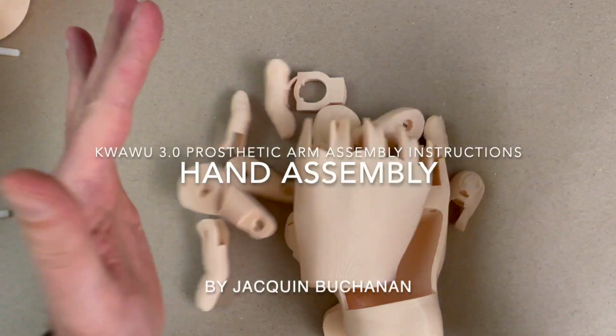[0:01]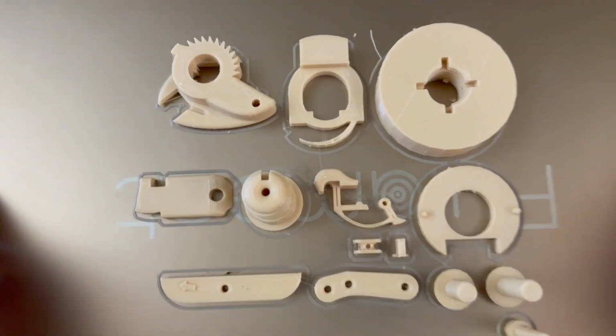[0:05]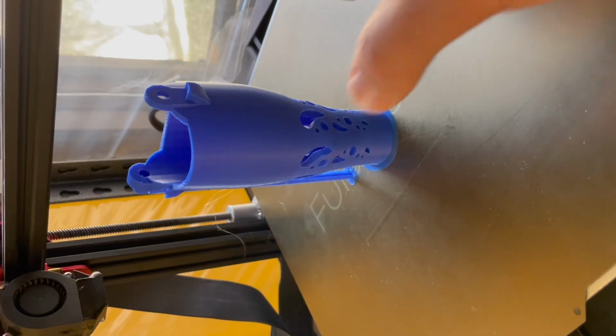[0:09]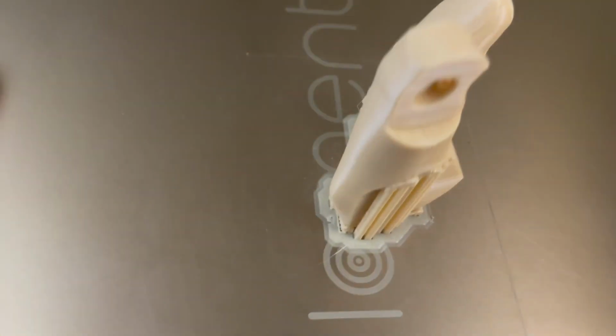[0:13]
Welcome to the Kwawu 3 hand assembly video. You've probably spent days and hours printing each of these parts, and you're excited to get ready to assemble the hand together. But first, we're going to have to clean all these parts. And so I'm going to go through the various tools that I tend to use to do the cleaning.
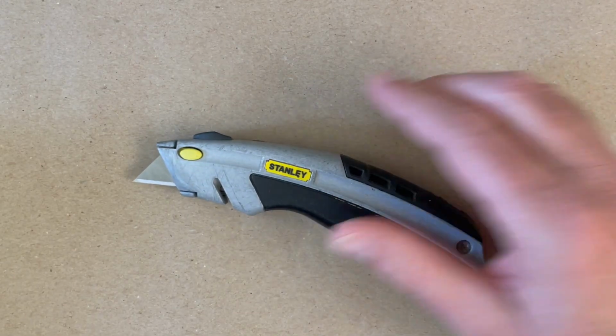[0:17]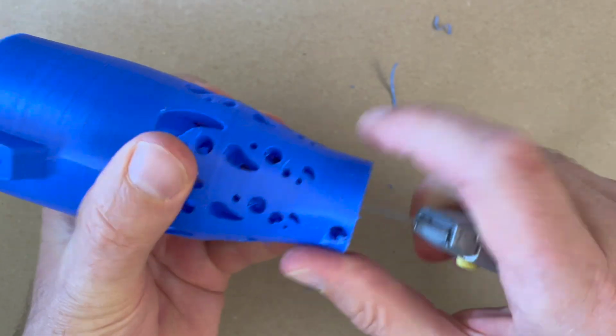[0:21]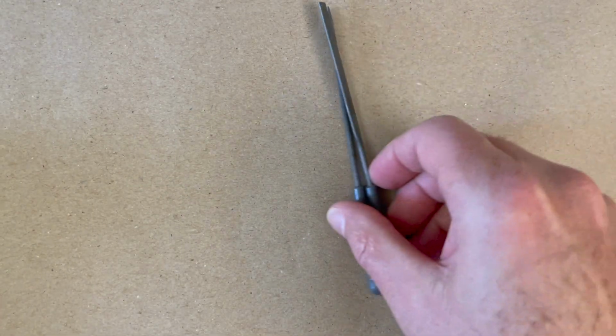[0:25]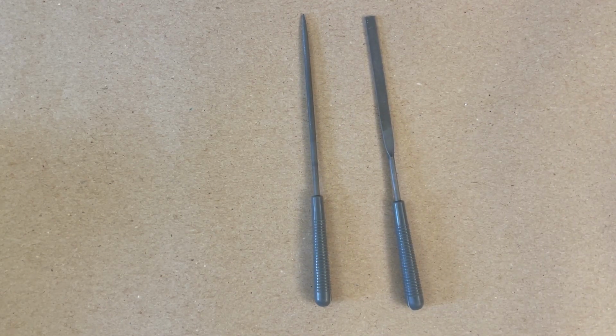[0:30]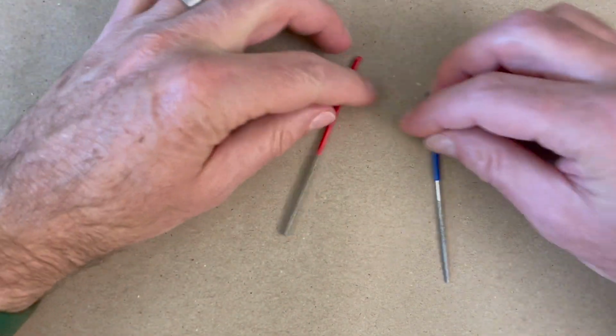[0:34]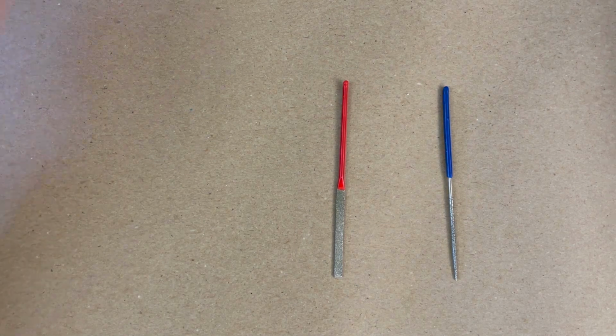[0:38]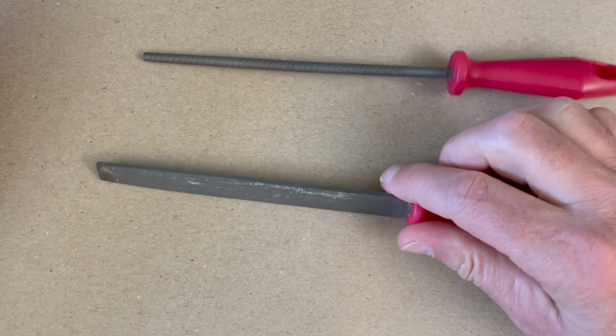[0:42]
My favorite tool is the utility knife. This thing is really useful to scrape parts, clean parts, cut parts. It's my primary tool. My second tool are these small files. I tend to use these small files to clean out the area where the hinges go, but these are kind of the files I use most of the time. I have another set of files that I use for the child size, a little bit smaller. They tend to be sold as jeweler files. I also use these larger files when I really need to smooth something.
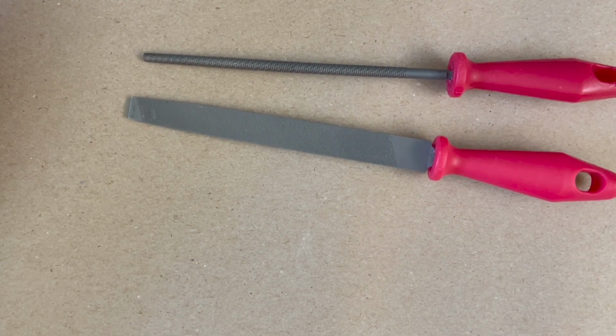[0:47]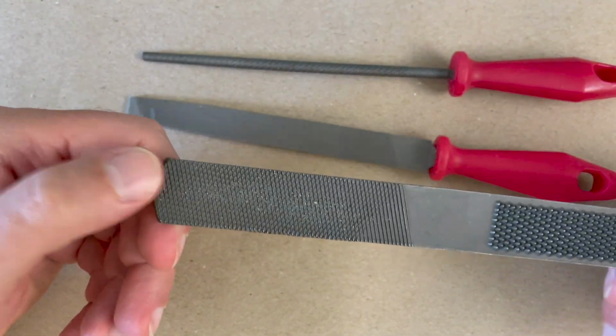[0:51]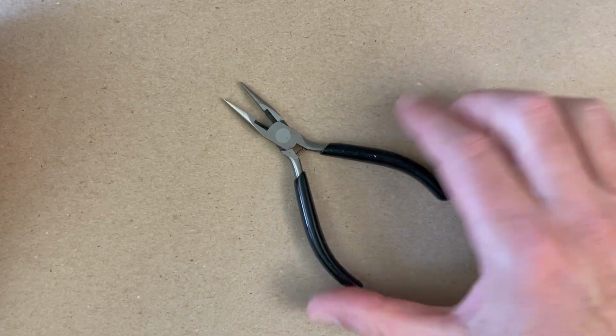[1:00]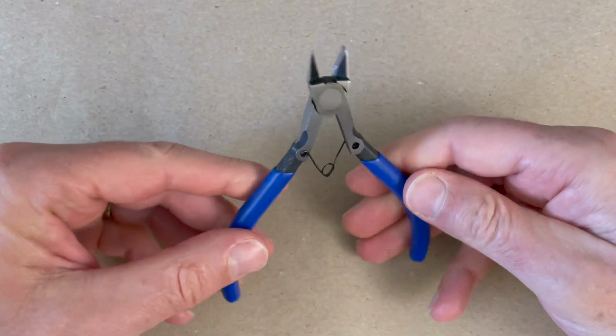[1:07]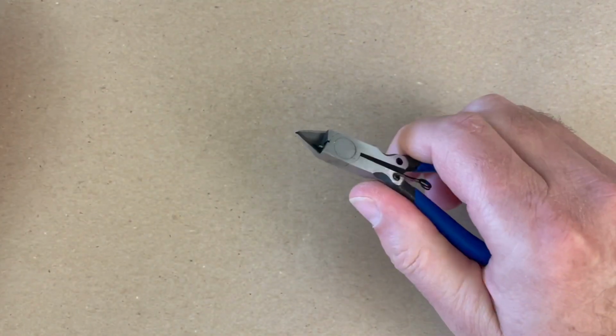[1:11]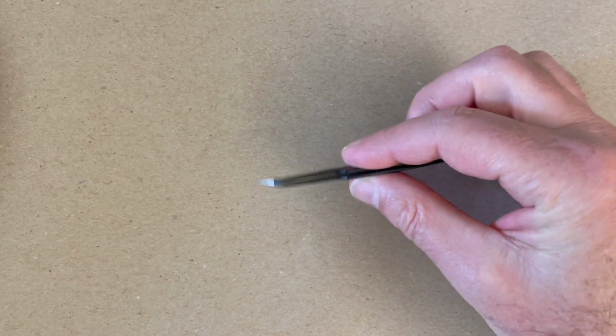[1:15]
Printed parts that are maybe touching the print plate and various things like that tend to need a little more plastic taken off. And I use these larger files just to really clean out some plastic. Needle nose are great, pulling off, tying knots. They're great for pulling off supports, all sorts of things like that. These flat end clips are great. I use these all the time too for cleaning parts. Tweezers are great for tying knots primarily, pulling string through, stuff like that.
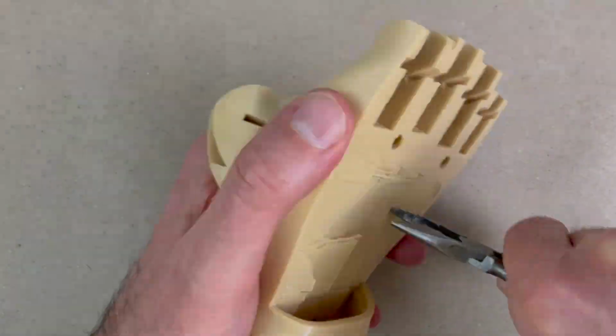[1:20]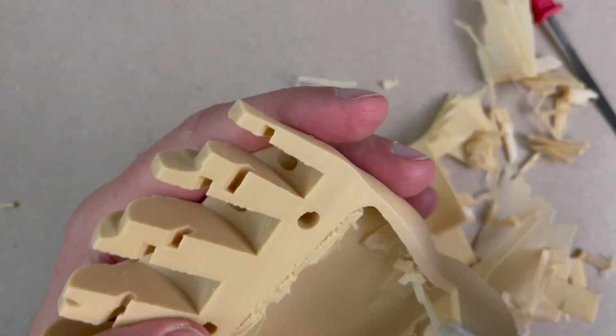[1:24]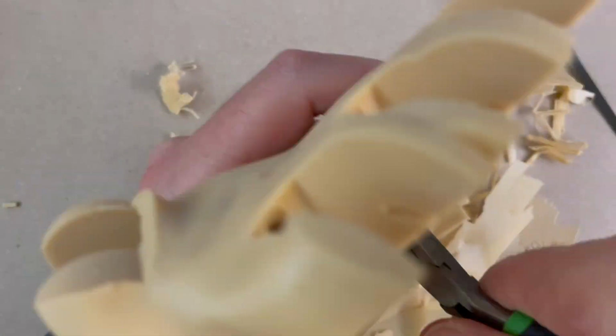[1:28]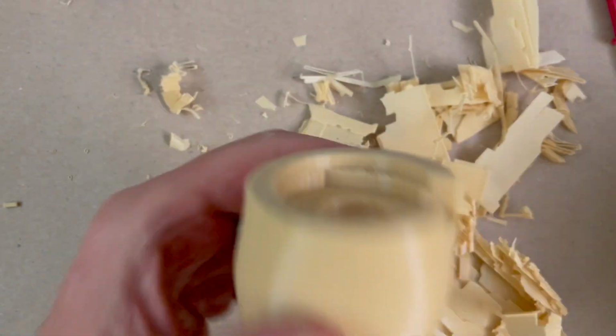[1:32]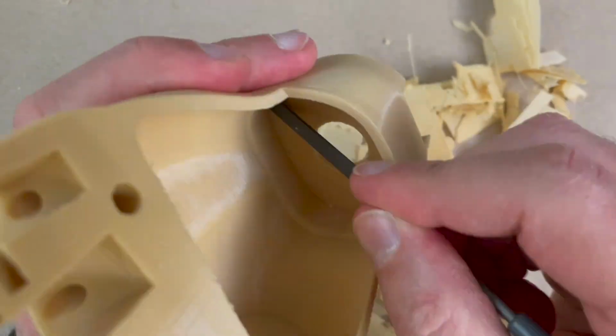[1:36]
All right, let's start cleaning these parts. I hate to break it to you, but that's gonna be most of this video, is cleaning the various parts. I spend roughly an hour, maybe more, on each hand. I'm going to go ahead and clean all the parts here for the entire arm while I've got all this equipment out for cleaning, but it really is the major part.
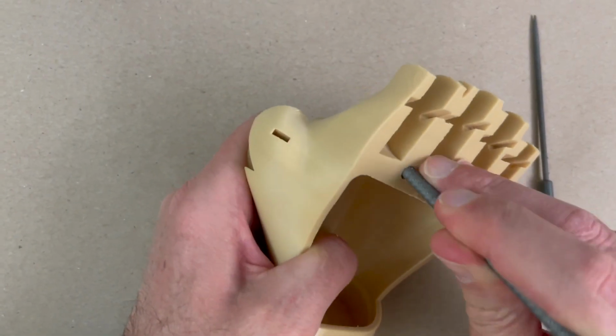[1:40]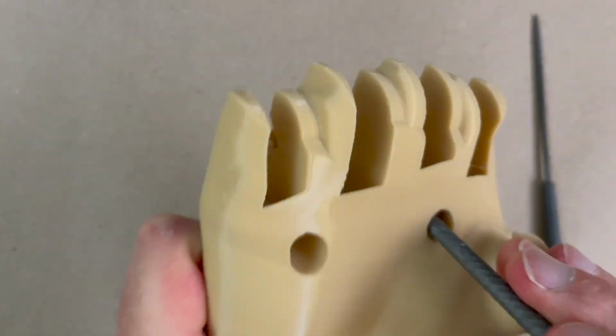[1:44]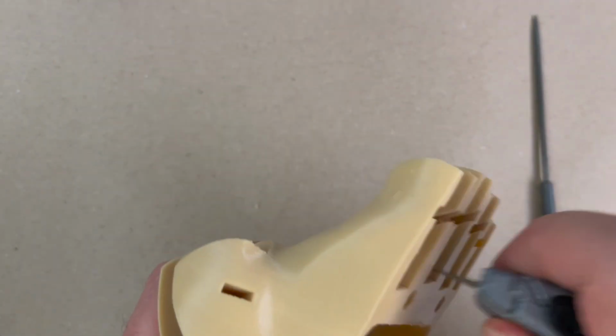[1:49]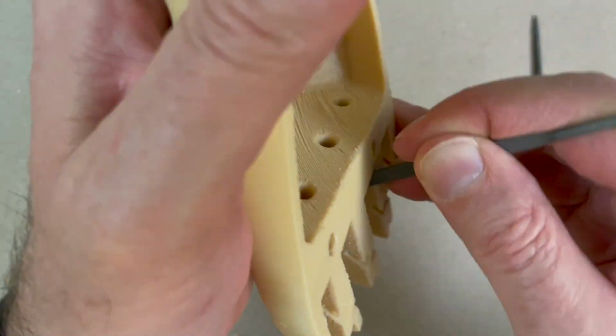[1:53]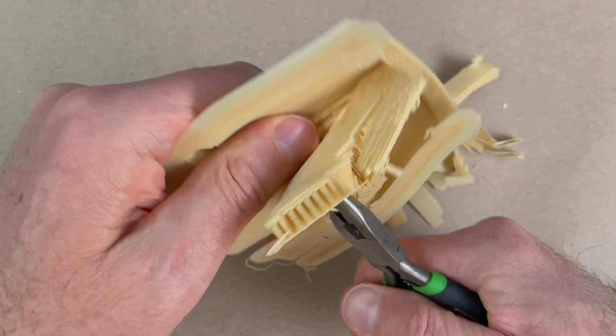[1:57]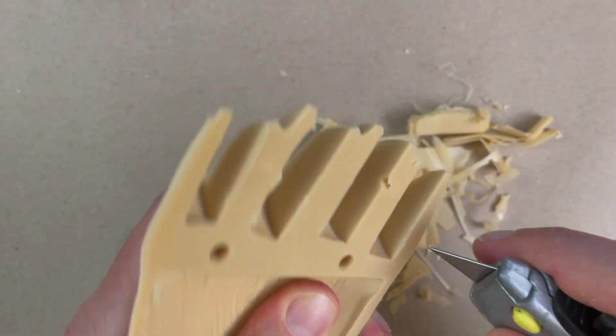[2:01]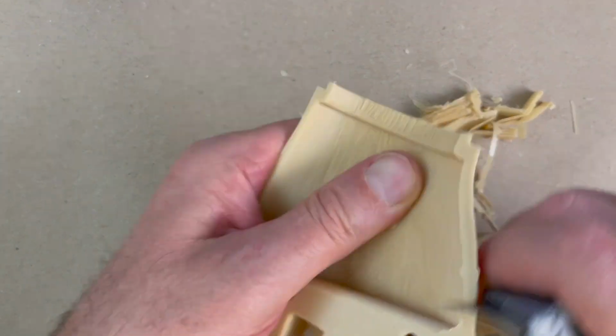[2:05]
So I pull the supports out, clean out all the various holes, particularly if there's drooping in the bridging over these holes. I like to get them all clean, clean all the edges so all my parts slide next to each other really well. I'm going to file the parts and then try them next to each other, make sure everything moves really clean. Again, the utility knife is my favorite tool. I use it to clean the edges and clean out parts most of the time.
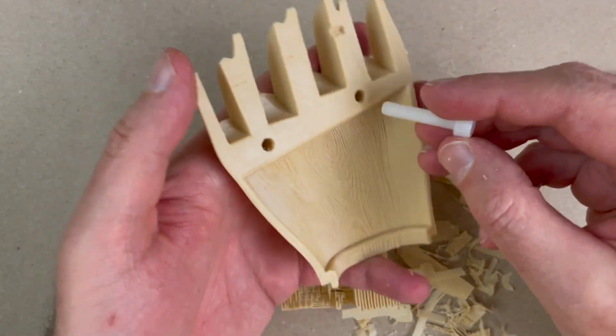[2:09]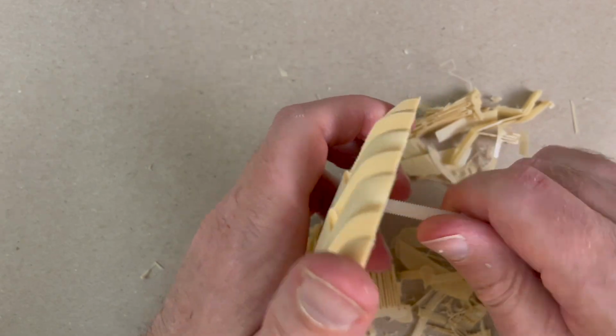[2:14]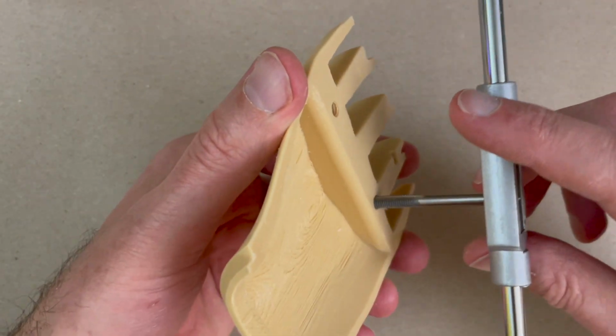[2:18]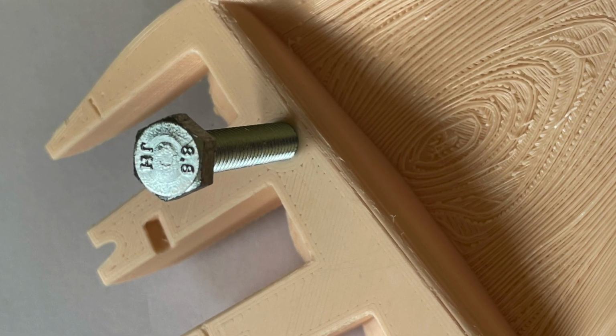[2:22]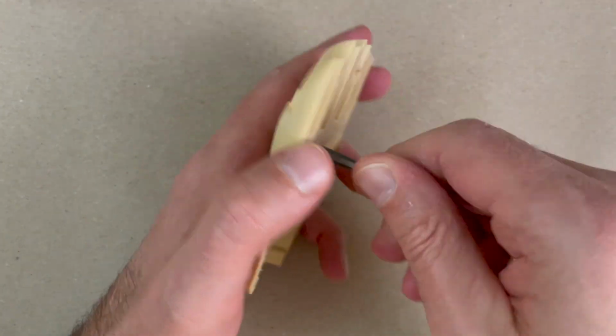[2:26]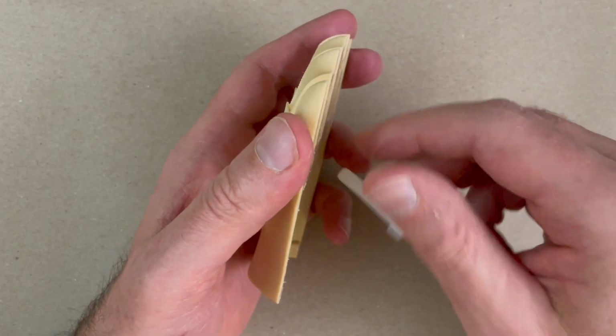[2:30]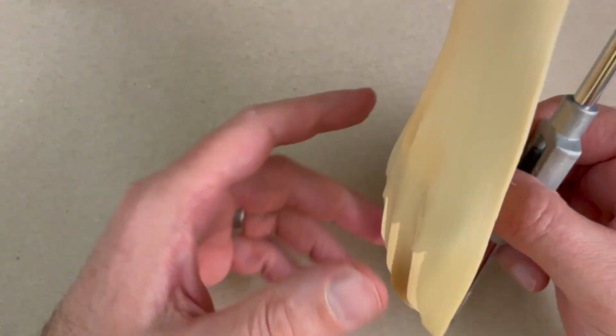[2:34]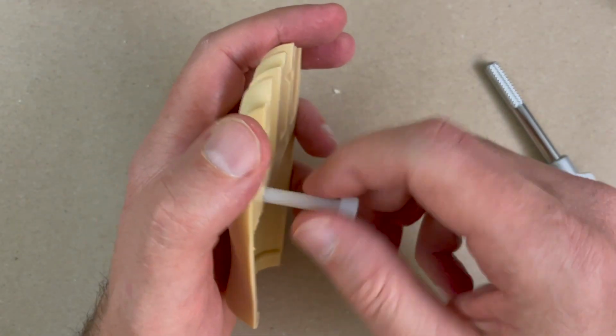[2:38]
Let's try and fit these bolts in the hand, right? I tend to use a tap and die thread to clean out the threads. You can use a regular metal bolt, but I use the tap and die just because I have a set. All the threading on the Kwawu hand is in metric, so if you're gonna buy a few sets, they're all in metric. So sometimes I have to clean it out twice, but I like to clean it out until I can sort of put the bolt in there really easy.
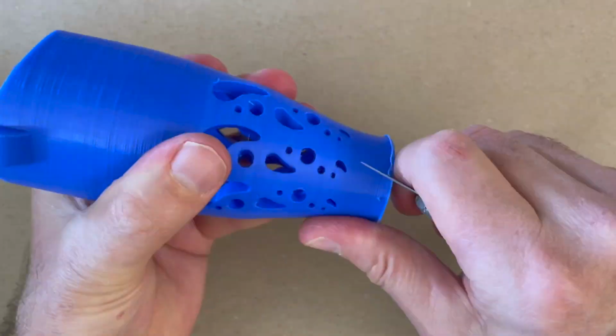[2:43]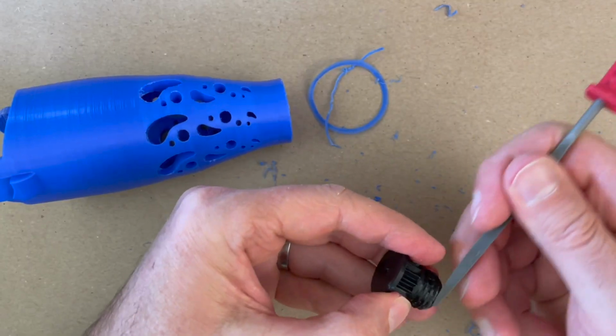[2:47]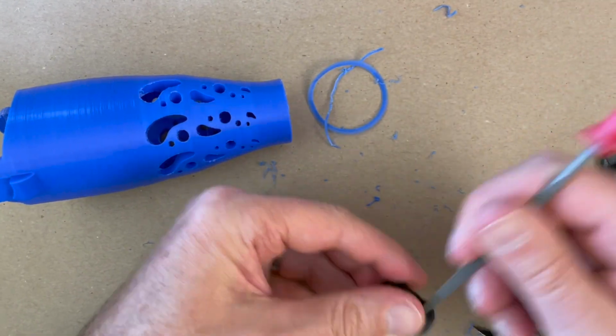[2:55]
Now let's move on to cleaning the socket itself. I'm gonna clean it mostly with the utility knife. I wanna get this thread from the wrist bolt really nice and clean, so it goes in easily as well. So I'm gonna clean the threads off a little bit, both inside and out. I wanna make sure that this wrist bolt screws in nice and easy.
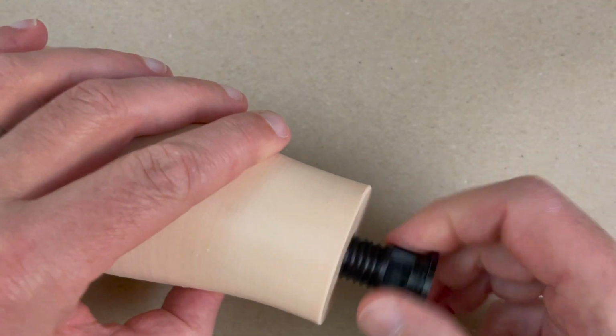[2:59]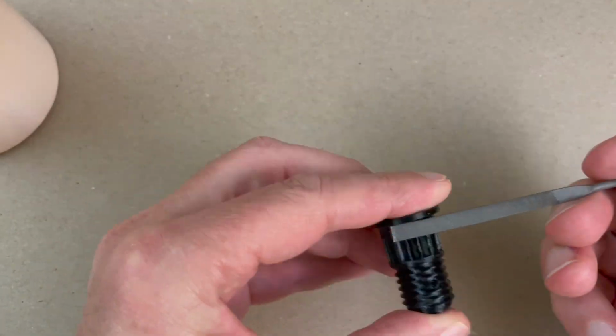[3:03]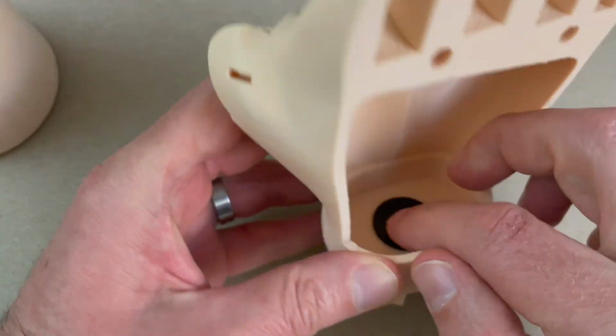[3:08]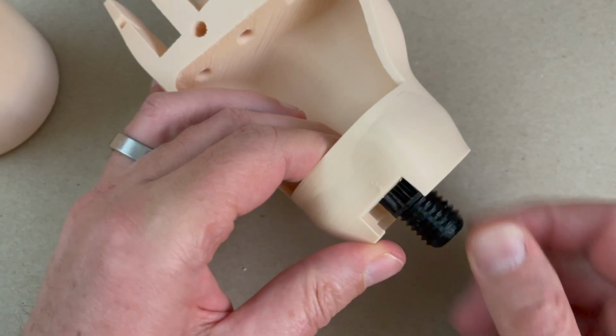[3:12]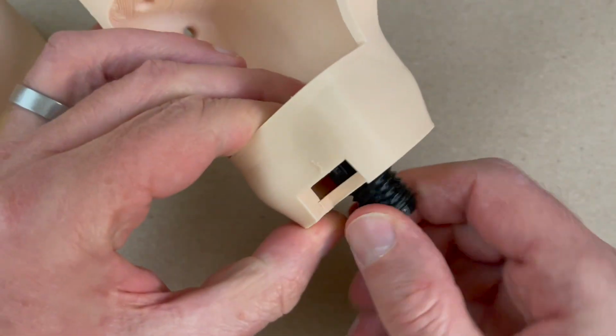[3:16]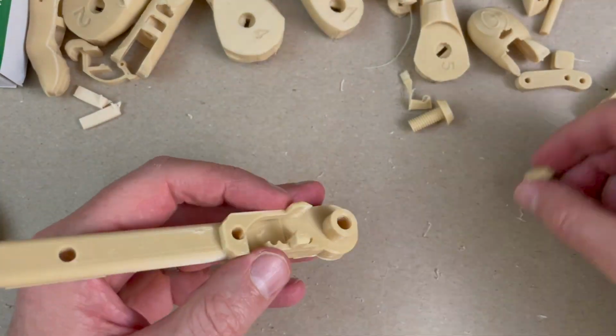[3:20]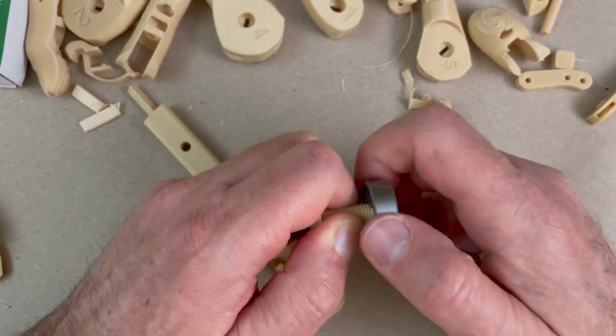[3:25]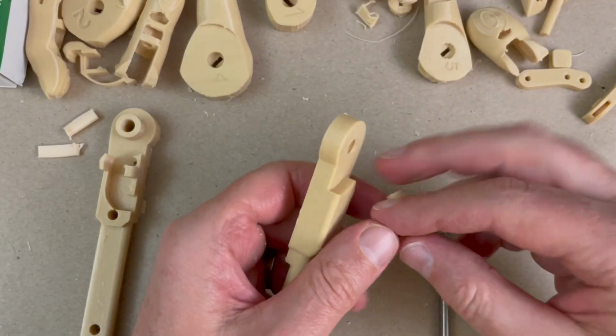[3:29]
Again, I'm going to use a tap and die on the elbow bolts as well. I like to use the 3D printed elbow bolts. I think they work fine, so I'll use the tap and die on those as well.
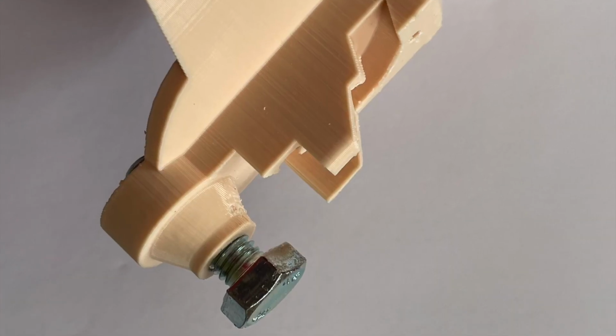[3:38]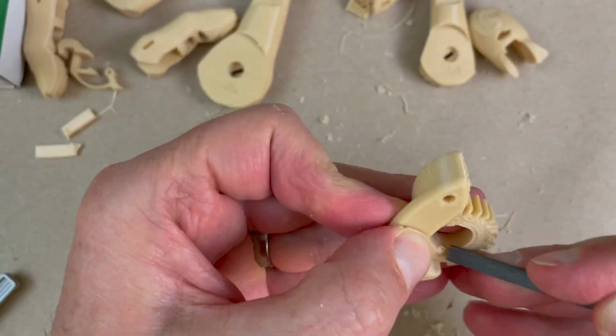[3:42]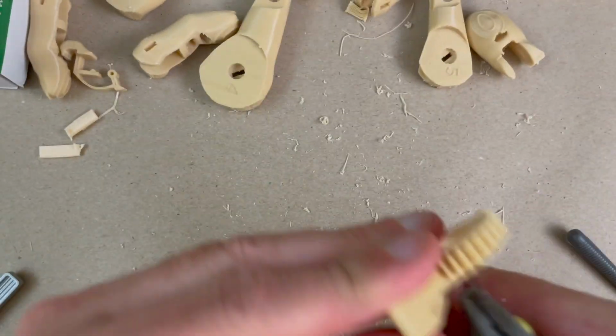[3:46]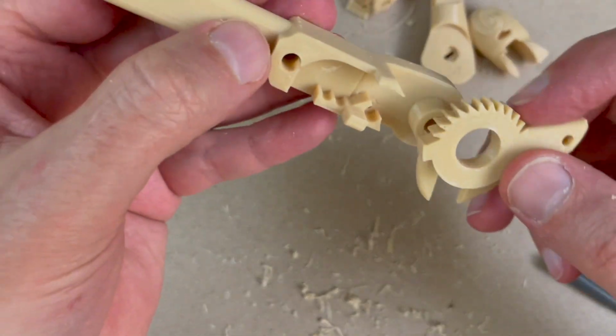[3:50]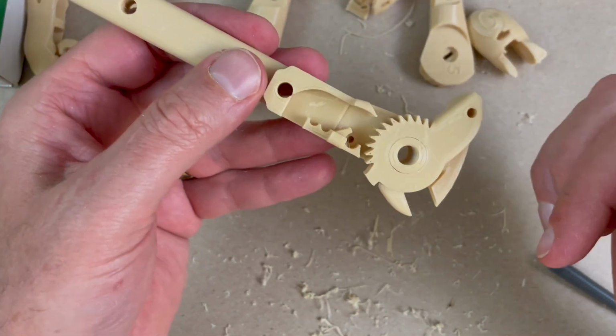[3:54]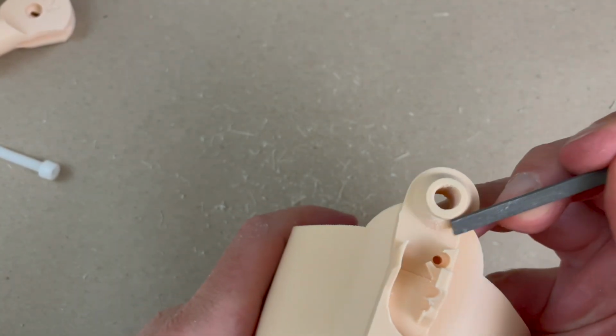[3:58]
You can use a regular bolt if you want to clean the threads. The elbow bolt in this ratchet area, it's a really tight fit. This is a 1 millimeter tolerance area, so expect to have to file this down and clean this a little bit to get these to move nice and smooth. They should move nice and easy and smooth. Not a lot of slop, not a lot of wiggle, but easily move.
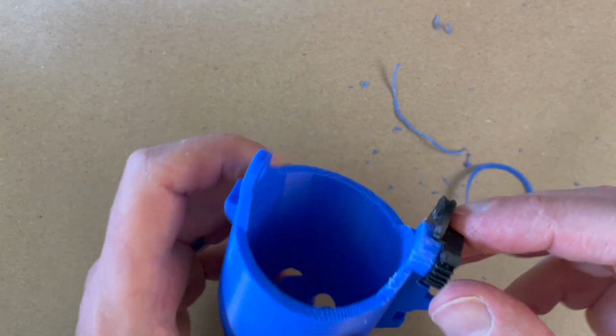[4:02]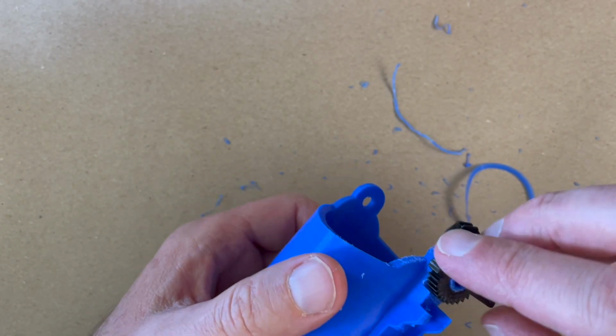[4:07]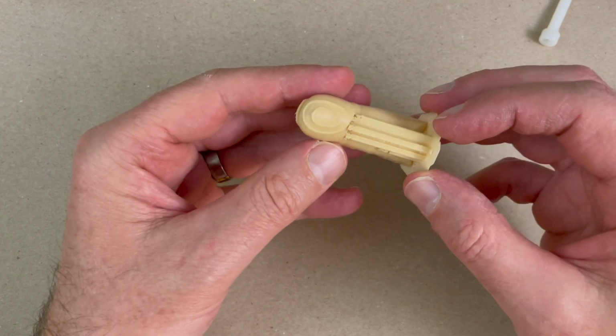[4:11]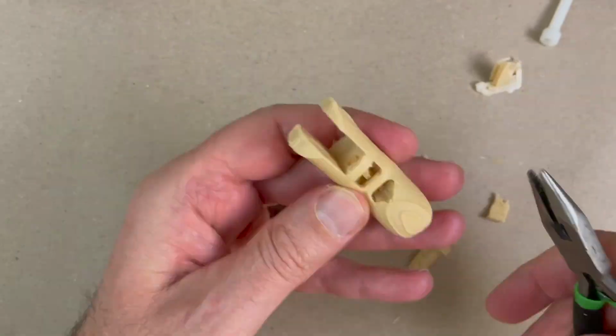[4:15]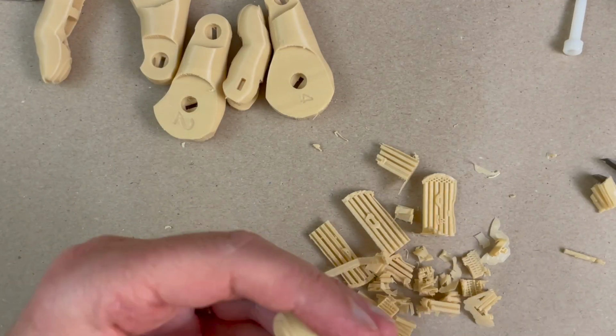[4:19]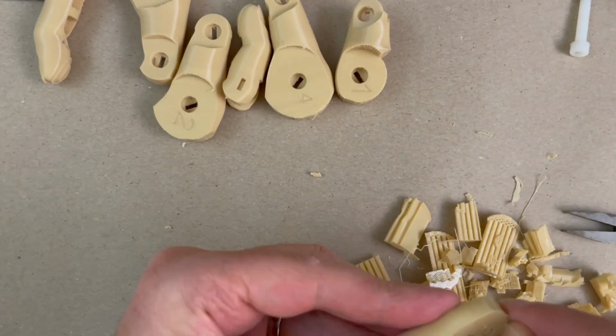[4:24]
Whether you're doing the socket or the wrap design, you're going to need to file this down a little bit. I'm going to go ahead and clean all the fingers. This is how I usually print them, right? I try not to get supports inside any of the holes in the parts when I generate supports, because it's just hard to clean them out and it shouldn't be necessary.
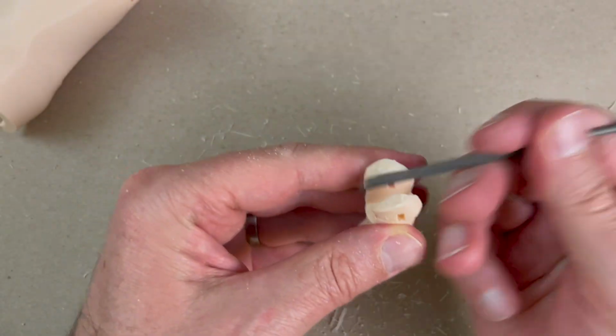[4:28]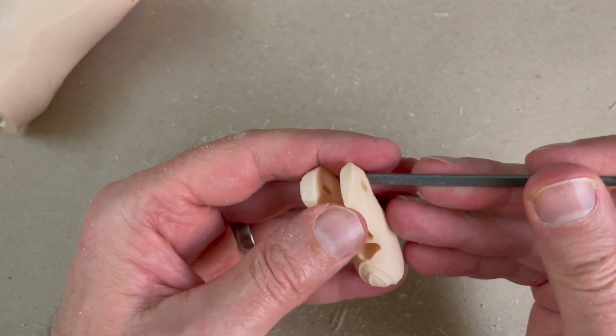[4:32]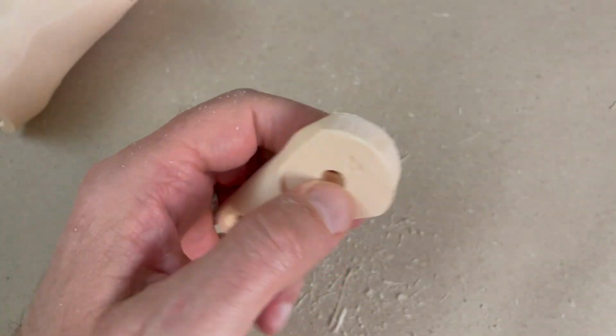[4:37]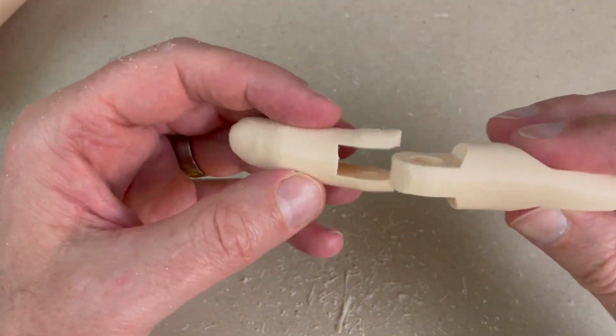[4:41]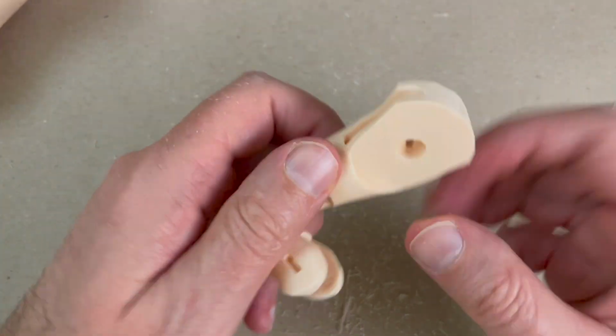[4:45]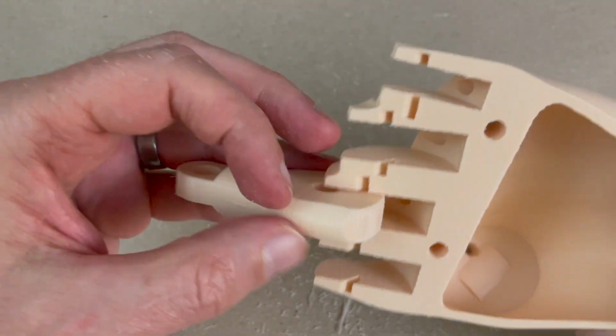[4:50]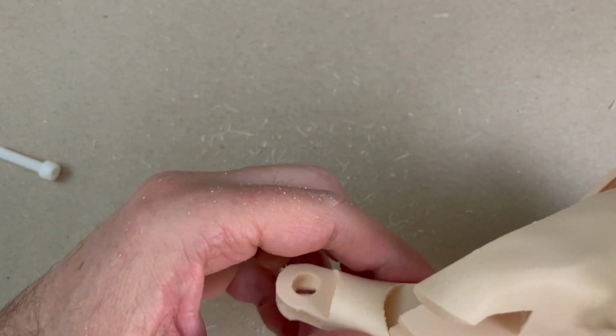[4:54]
So again, I'm gonna file all these down, particularly the areas that touch the printer bed. I want these nice and round and smooth, and the area where the hinge goes in, I want that all nice and smooth. I'm gonna test each of these finger parts to make sure they move. I don't feel any friction. No rubbing, right? Just make sure they go well. All right, I realize I'm putting the number 2 finger in the number 3 slot. Sorry about that, I didn't get to re-record.
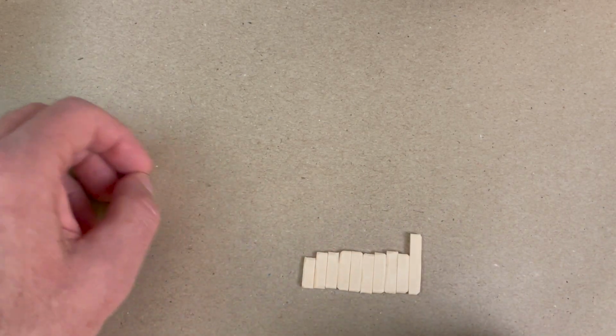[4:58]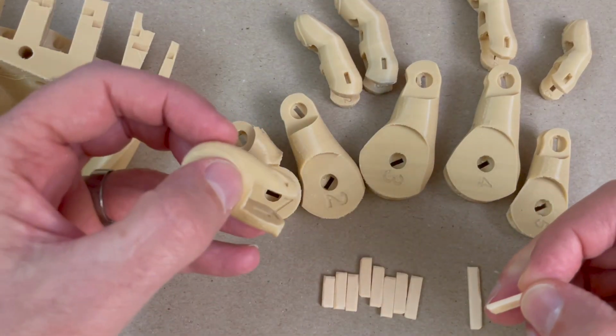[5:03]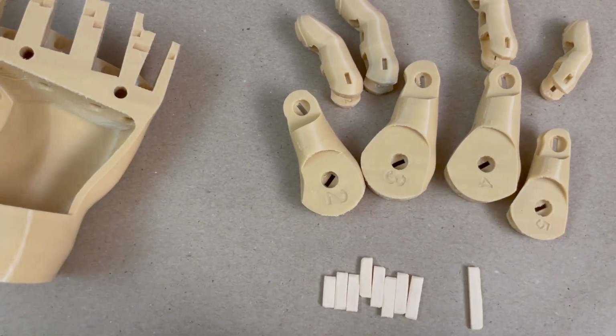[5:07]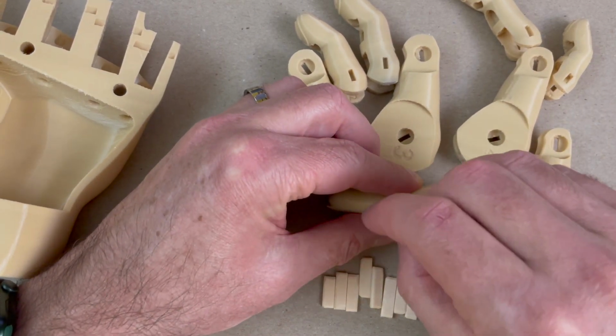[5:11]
All right, now that we've got everything clean, let's start assembling things. I've got these hinges here, and I've sort of lined them up in order of size just to make them easier to identify. I start putting the thumb together because it's the hardest one to put together, and I like to know that everything's gonna fit okay.
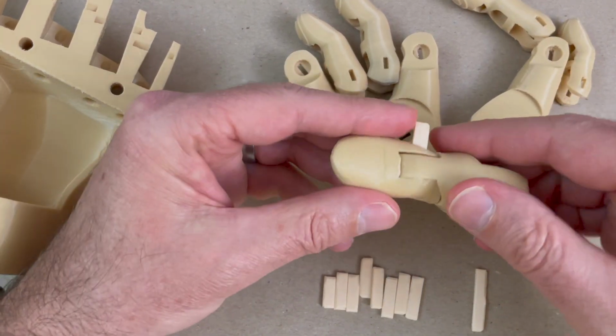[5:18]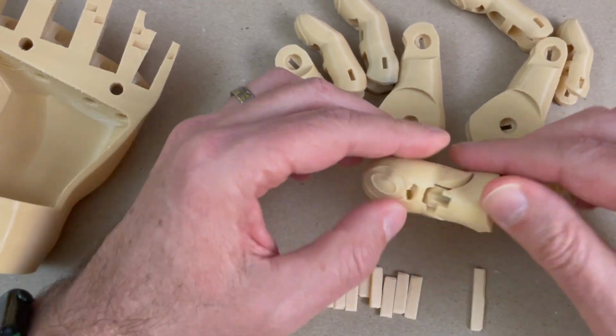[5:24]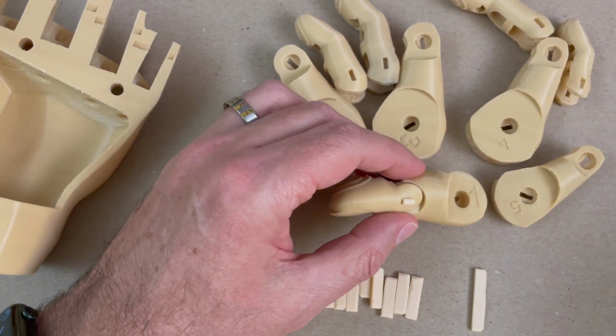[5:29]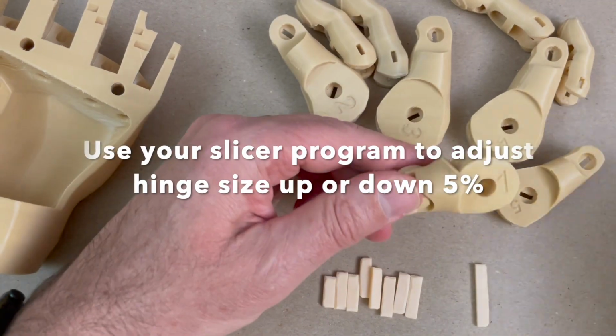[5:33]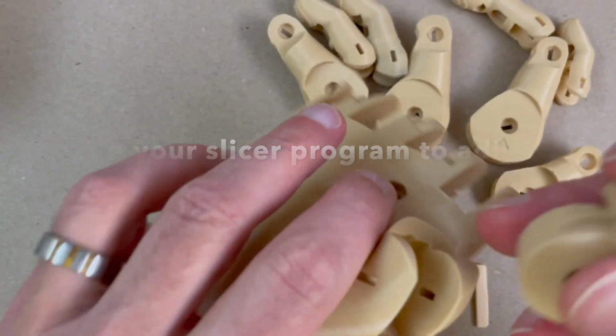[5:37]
If I didn't say in the printing section, printing these hinges is a little tricky. The humidity in the room, various things, just makes the print slightly different every time. So if it doesn't fit just right, you might end up printing these hinges more than once, just to get them to fit snug, but not too snug. So they should be snug so they don't fall out, but they should also slide in relatively easily.
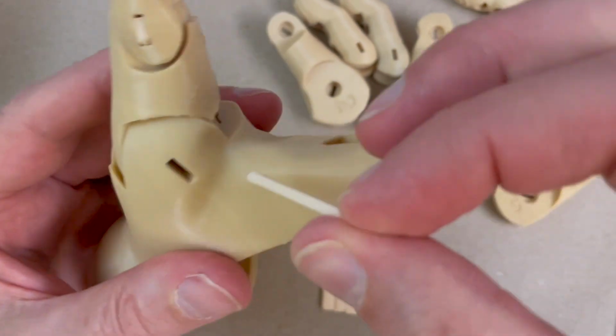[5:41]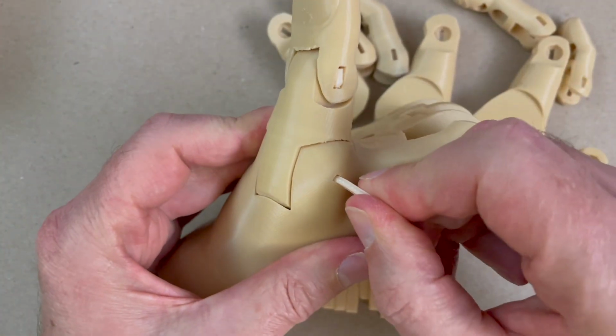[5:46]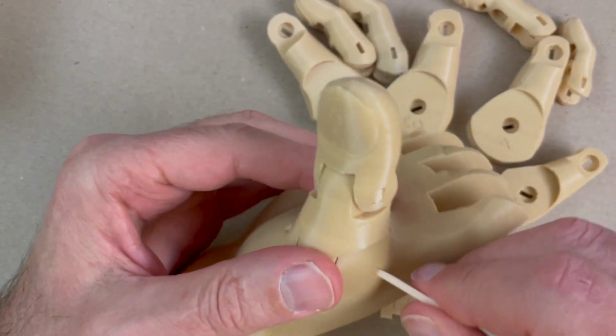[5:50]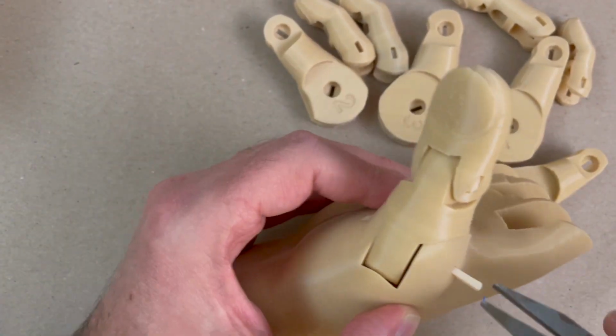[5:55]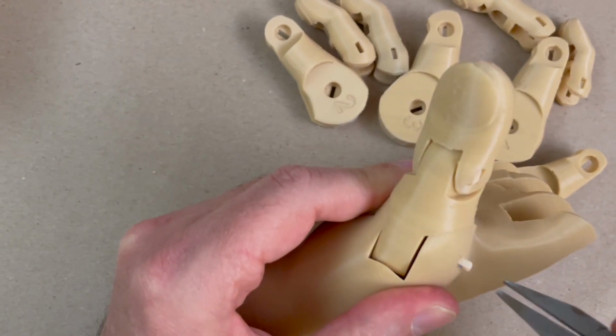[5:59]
And the thumb is the longest hinge. It's the one I like to do first, just to make sure everything goes okay. Because if I have to reprint hinges, I'll know right away with the thumb. Now I'm pushing this in. It should go in smooth. Often I need to use the needle nose pliers to help this thumb hinge go in, get a better push on it.
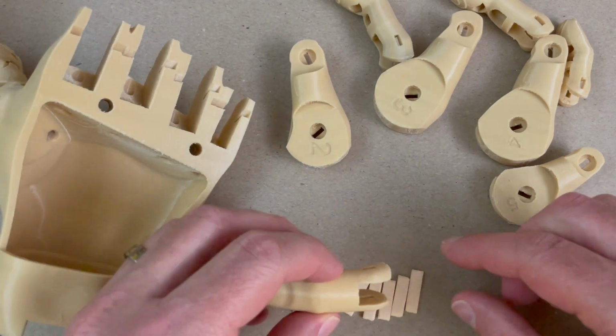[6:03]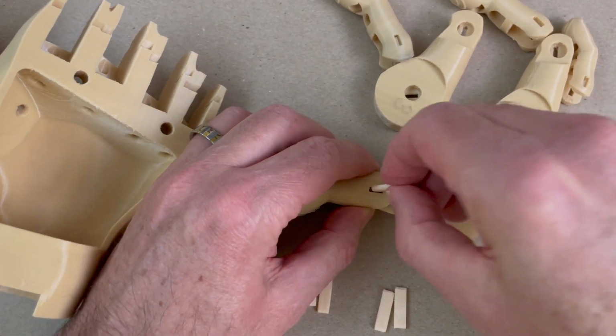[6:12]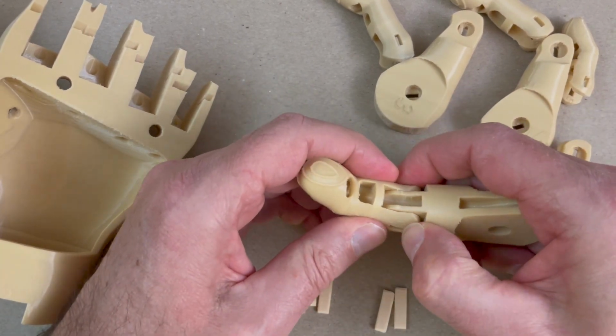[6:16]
I generally do the fingers in order. I don't think you have to, but I do. I start with the end hinge, right? I just measure each one, find the one that's supposed to fit there, put it in.
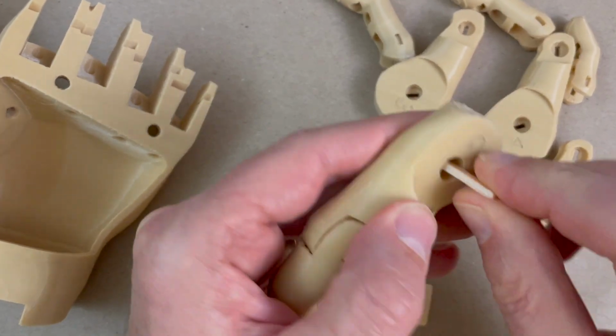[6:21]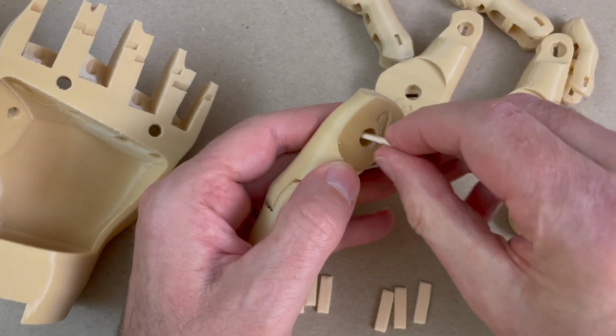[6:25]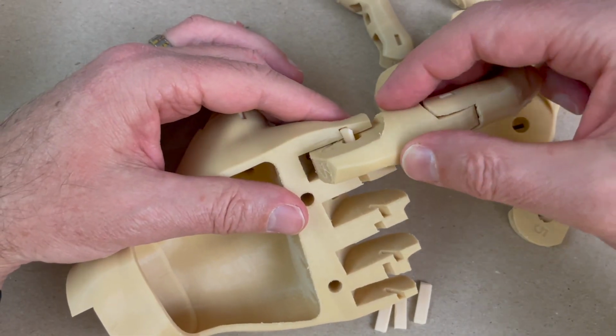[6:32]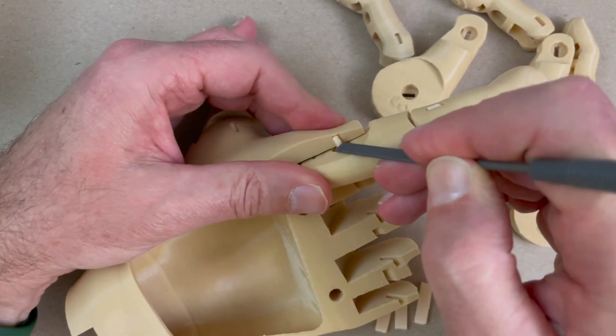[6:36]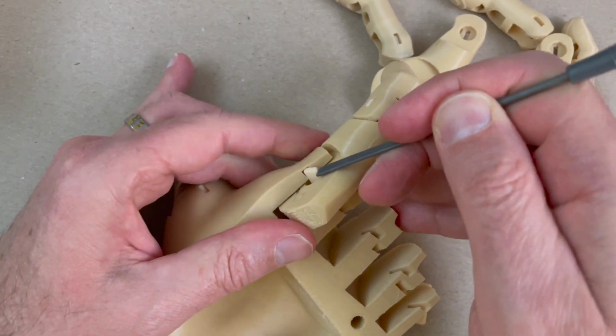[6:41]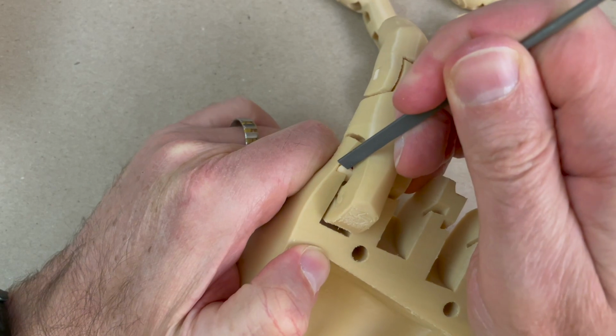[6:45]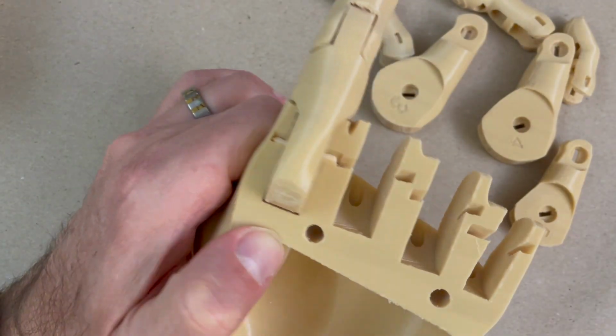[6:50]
Now the knuckle hinges are all the same, so you should have four knuckle hinges that are the same length. When you slip them in, they should go in pretty easily. They fit deeper into the hand palm itself now than they did in the version 2. So that holds the finger in nicely so it doesn't fall out while you're still doing this part of the assembly. But it does mean you're going to have to use a little tool to actually push it in there, because it should be, again, a snug fit down in these slots.
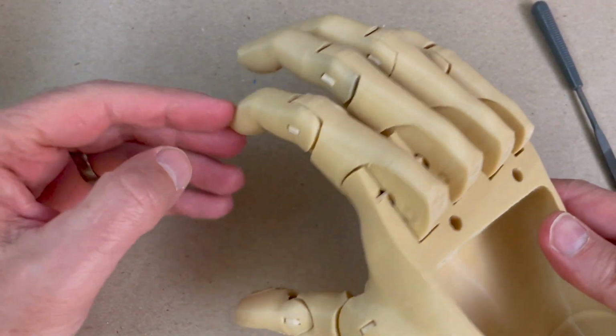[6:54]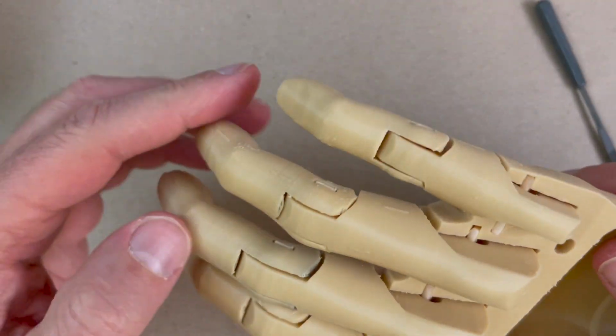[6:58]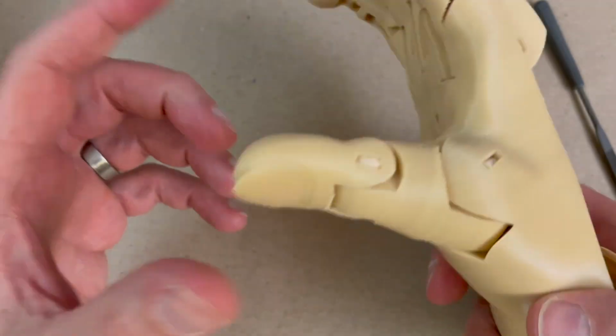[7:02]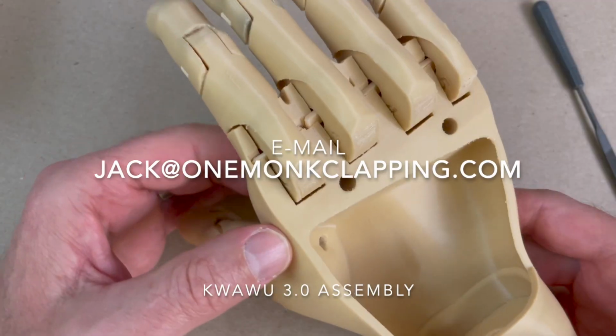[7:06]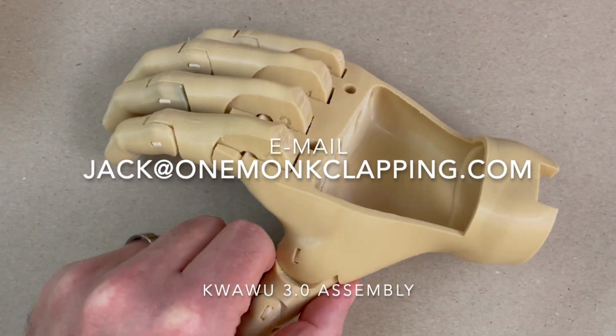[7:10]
Now that I've got that finger in there, I'm gonna go ahead and do all four of them. Now I've got them all together, I wanna test. They should bend nice and easy. I shouldn't feel any resistance other than the bending in the hinge itself. If I need to take it apart, file something down, now's the time to do it. All right, so now my hand is assembled, all my parts are cleaned and ready to move on to the next section.